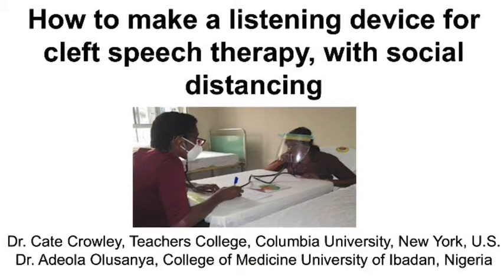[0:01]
My friend and colleague, Dr. Adeola Olusanya from the College of Medicine, University of Ibadan in Nigeria, has developed and invented this listening device where you can hear hypernasality and nasal emissions. It was inspired by Dr. Ann Kammer's listening device, but this one you can actually make yourselves, and it's especially effective during this time of social distancing.
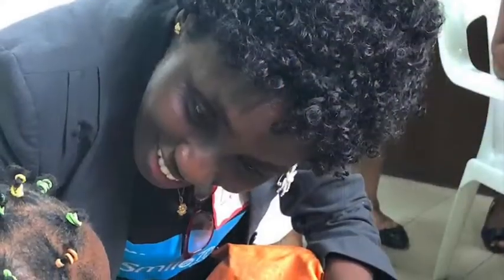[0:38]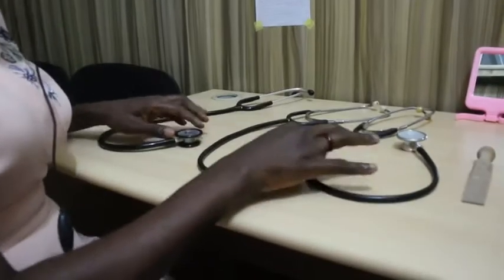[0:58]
Hi, I'm Dr. Adiolo Alusonia. I'm an oral and special surgeon with a special interest in comprehensive cleft care. Today I'm going to be showing you how to make an oral nasal listener, an ONL, from three old stethoscopes. And these are the stethoscopes that we're going to use.
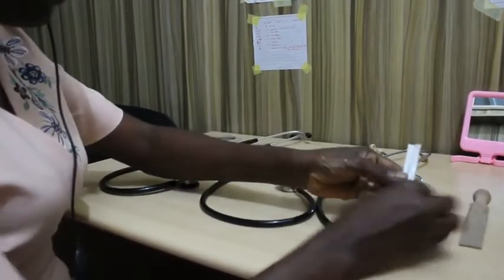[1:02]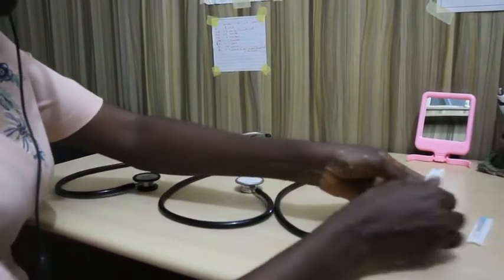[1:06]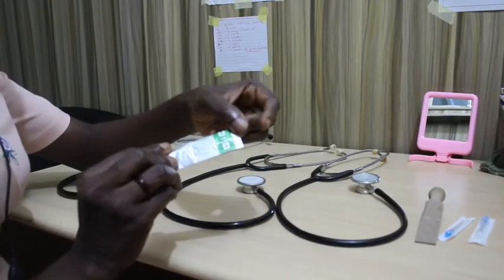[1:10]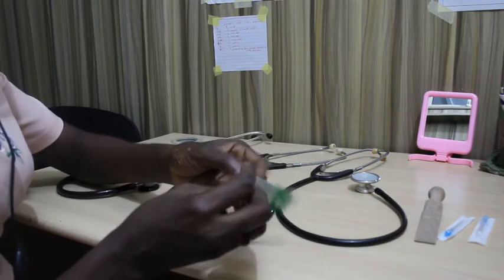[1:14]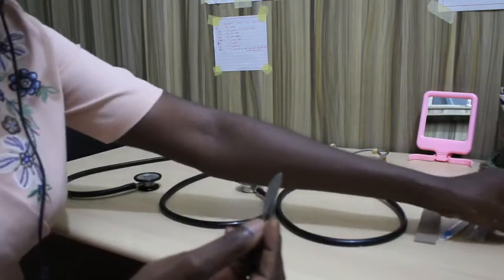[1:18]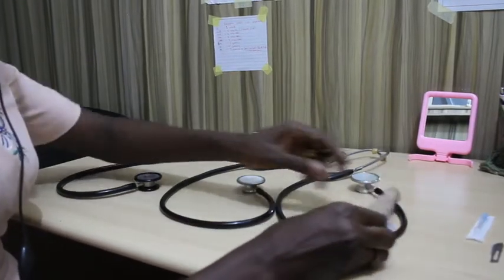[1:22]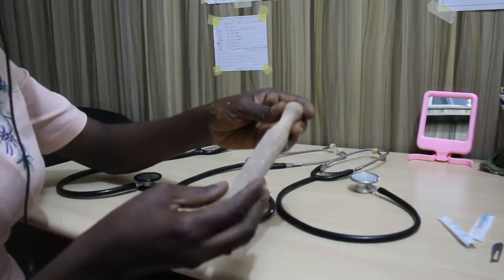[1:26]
We'll also be needing two hypodermic needles. We'll be needing a scalpel blade, a number 22 scalpel blade should be good enough. Any large scalpel blade should do. And then you'll need a solid platform, any solid platform will do, that we can use as a base.
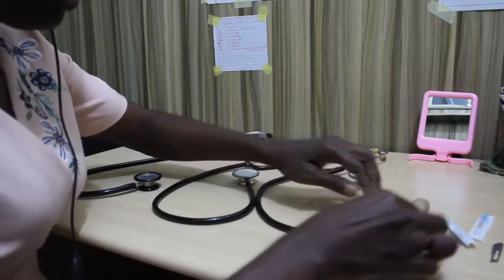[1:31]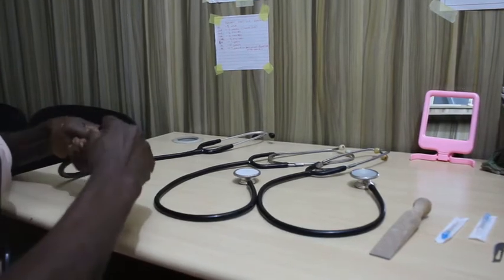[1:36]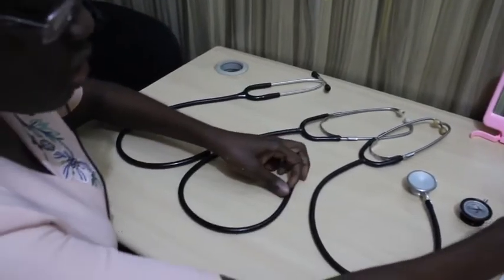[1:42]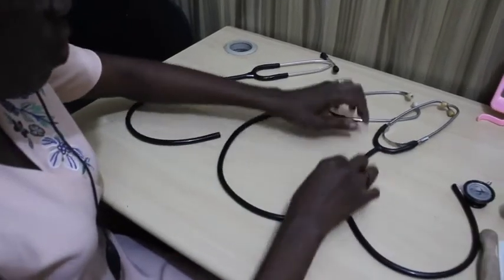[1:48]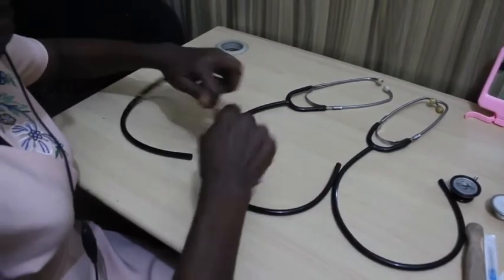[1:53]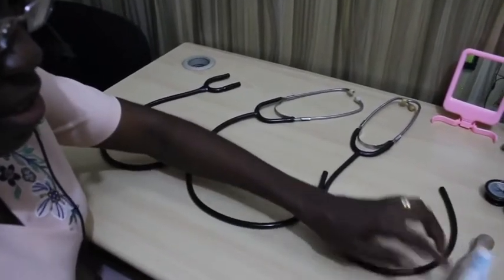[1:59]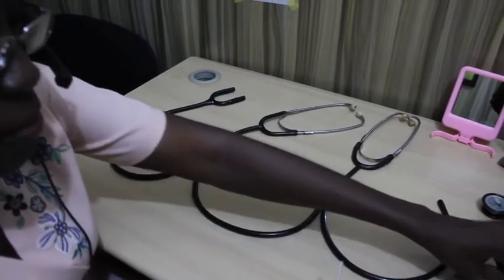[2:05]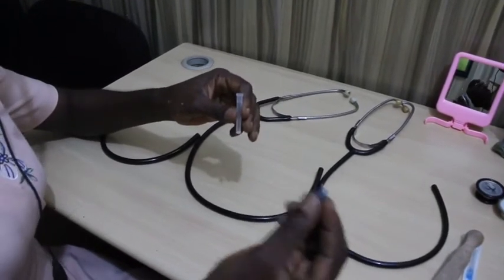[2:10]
Now, the three stethoscopes, we're going to remove the bells of the stethoscopes. We're making use of stethoscopes that otherwise would have been discarded. And then the worst of the stethoscopes will remove the two ear pieces and put those three aside. So the hypodermic needles, we would remove their caps and also discard the hypodermic needle itself.
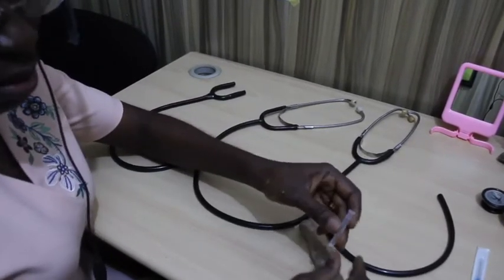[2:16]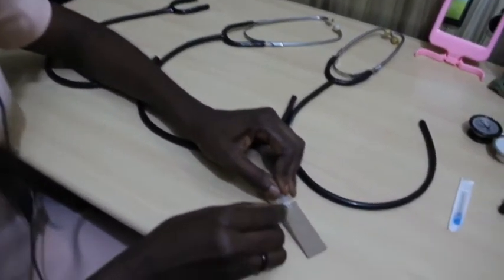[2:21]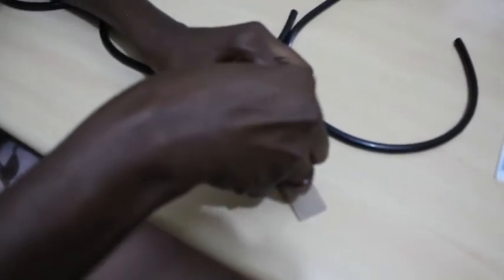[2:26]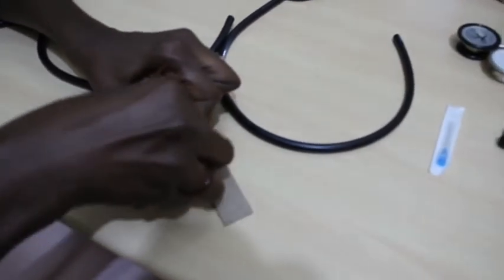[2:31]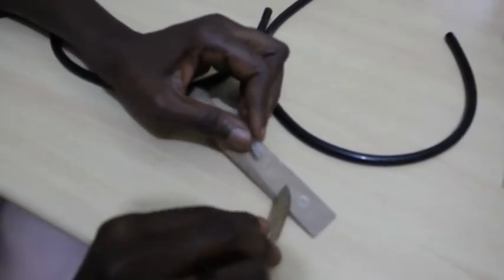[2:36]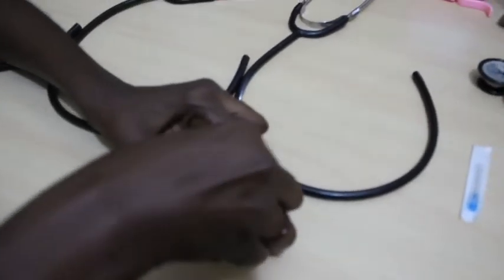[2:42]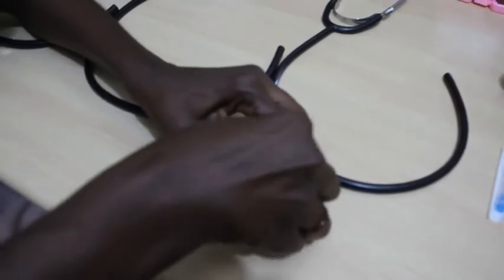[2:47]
So we're going to be making use of the plastic caps. We'll use the scalpel blade to remove the ends of these plastic caps using sustained pressure and making sure not to injure. So we'll remove this end and also remove the other end of the caps, also with sustained pressure and being careful not to injure oneself.
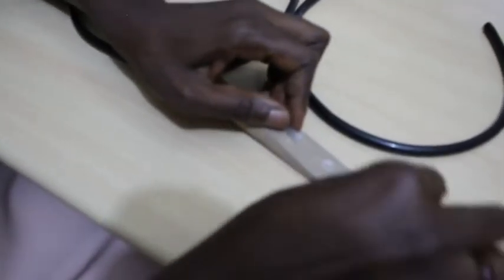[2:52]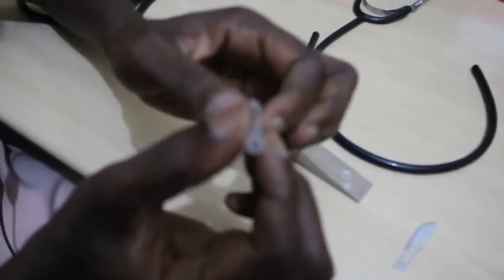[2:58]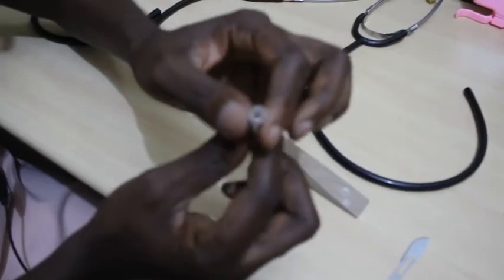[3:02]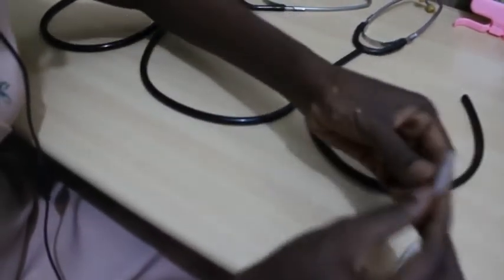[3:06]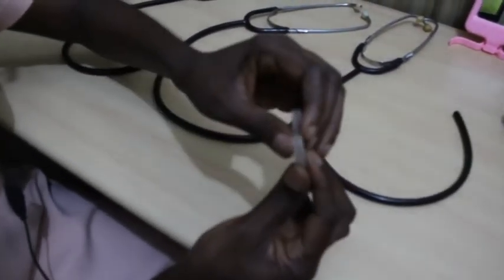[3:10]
So we can see. Doing this will turn the plastic cap into a hollow tube as we can see it. It's going to be hollow. So I've prepared already two of such tubes. We have hollow. So we'll now go back to the stethoscopes.
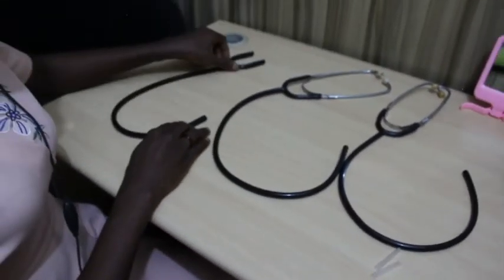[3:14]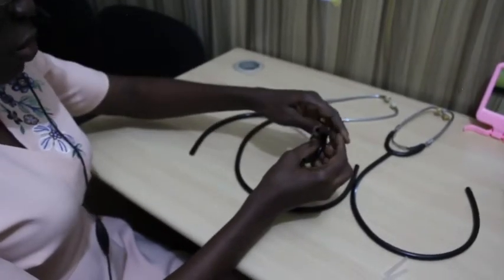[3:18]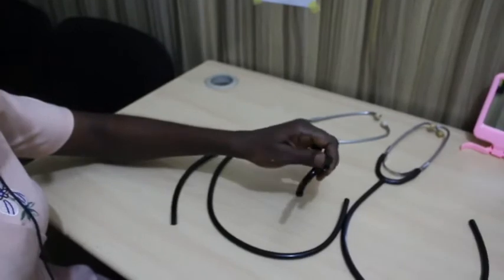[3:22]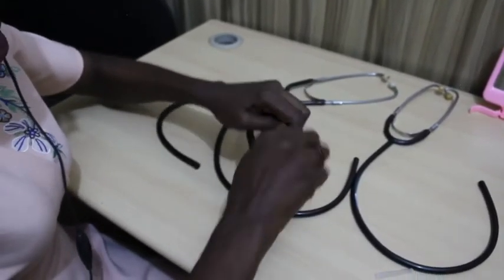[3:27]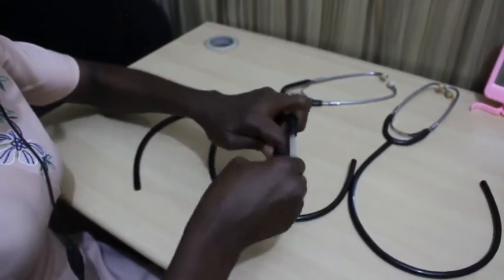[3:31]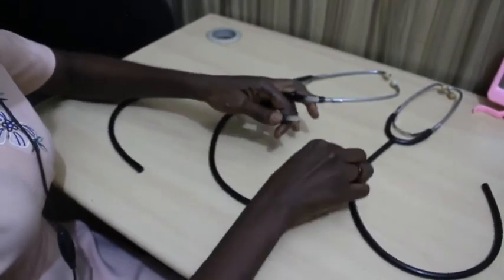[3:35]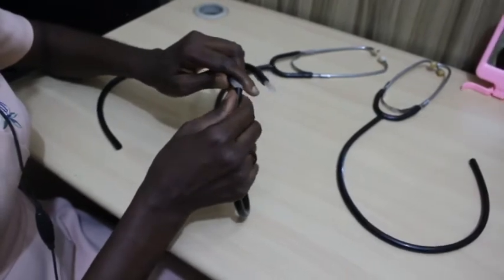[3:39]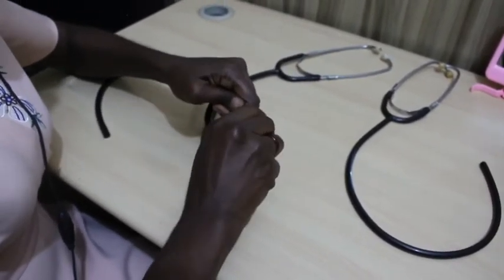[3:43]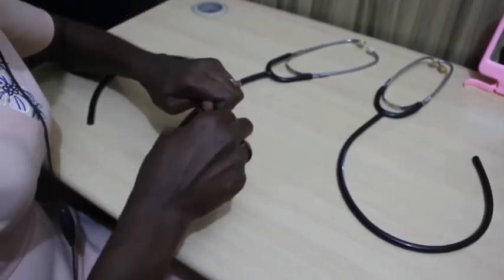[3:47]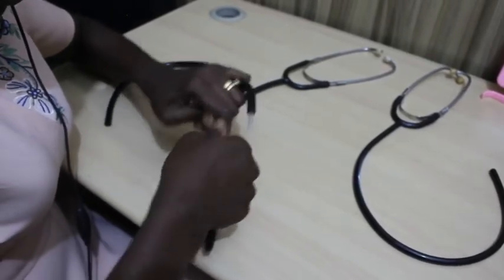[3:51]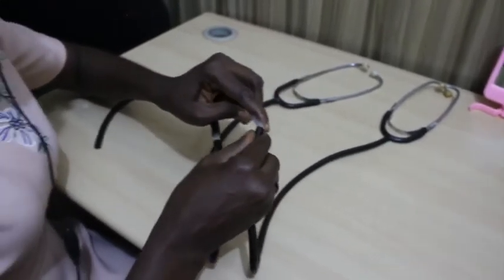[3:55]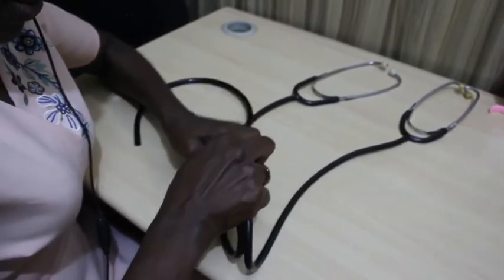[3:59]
We'll take the stethoscope that we have removed both the ear pieces and the bell. And at the wide junction where the ear pieces were, we'll put one of the plastic tubes and then we'll put the other and the other ear piece. We'll make sure it's tight fitting. Then we'll get the limbs of the other two stethoscopes and fix at the other end of the plastic tube. One on either side. We'll push them in so that they are fitting pretty snugly and also as tight as possible. Just the way you have them now.
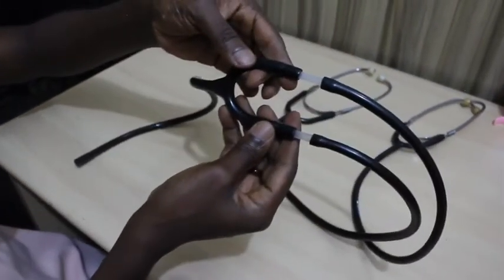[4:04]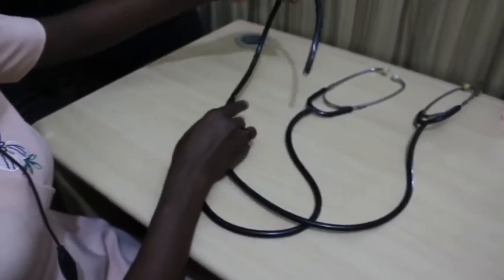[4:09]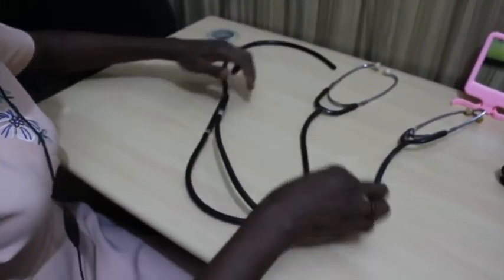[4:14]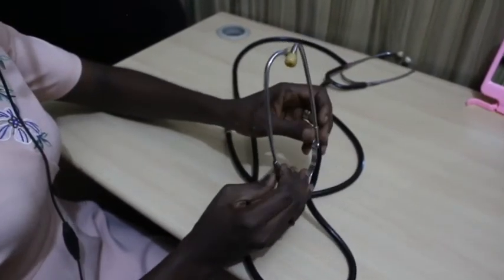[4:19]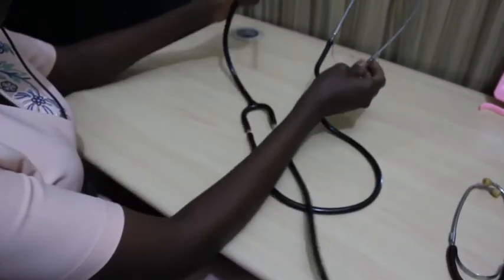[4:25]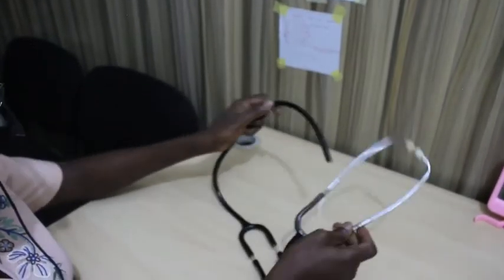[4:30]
So what we have done now is that we've converted these three old stethoscopes into a modified ONL. In which case the speech service provider will be listening at this end while the patient would use this near the nose and will be listening via this end. Thank you. So as you can see, it's fairly easy to make and you can use it for hypernasality and nasal air emissions and cleft palate speech therapy. And it can be used with social distancing.